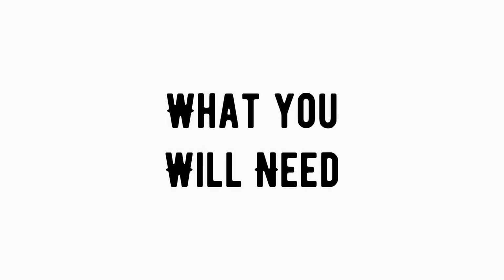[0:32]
Jason here from Instinct Ready, and today I'm going to show you how to make a very simple, very effective face mask using some everyday household items.
Now, many of you are out there buying up all the surgical masks, buying up all the N95 masks. Are you working in the medical field? What? No? Quit buying them, save it for the ones who need it. Now, this is the mask that we're going to make today. Very simple and effective. Let's get started.
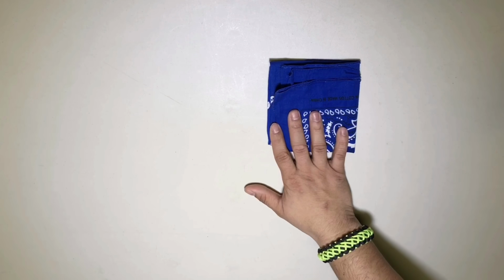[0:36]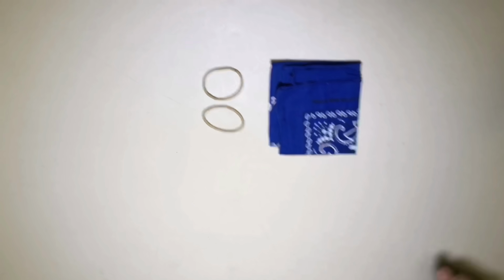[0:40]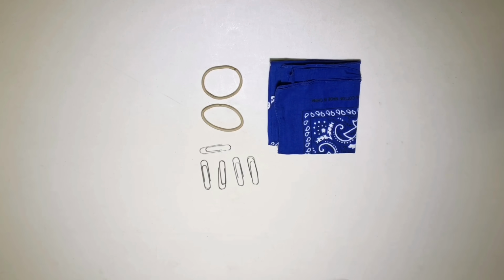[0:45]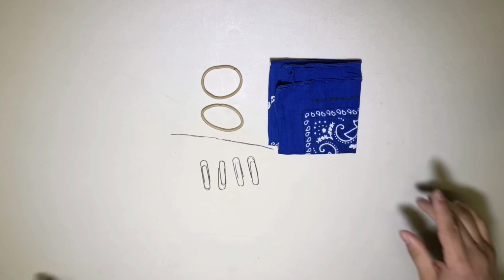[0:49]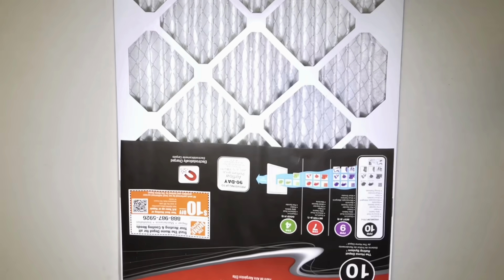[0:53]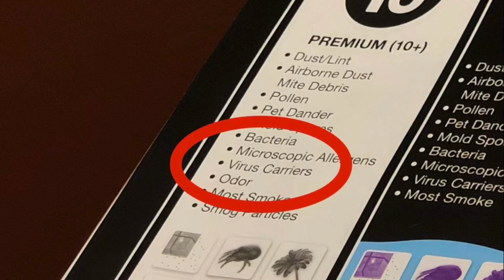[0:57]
So this is what we're going to need to make our mask. You will need a bandana or a similar fabric. We'll need 2 hair elastics or rubber bands, 5 paper clips, one which we have straightened out and turned into a piece of wire, some tape, specifically tape that will stick to the fabric, and finally we have a Honeywell FPR10 air filter, which can filter out particles as small as 0.3 microns, which includes viruses.
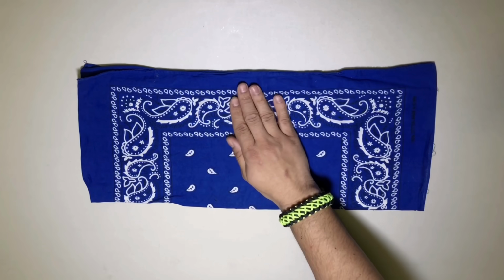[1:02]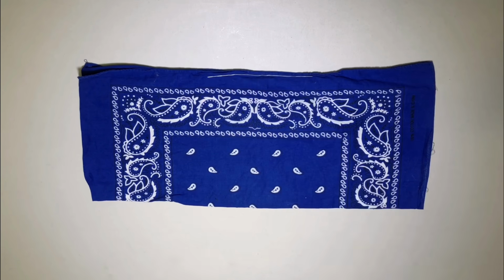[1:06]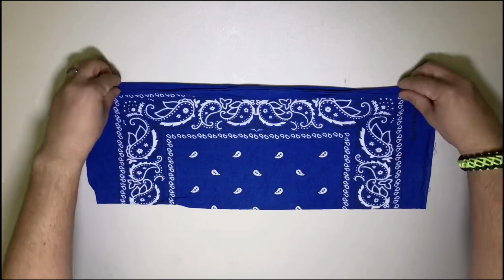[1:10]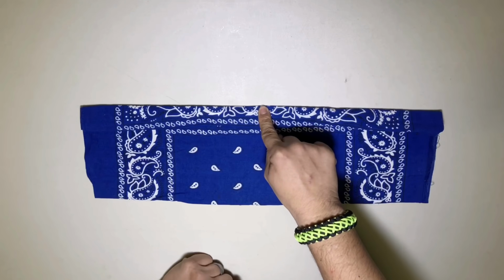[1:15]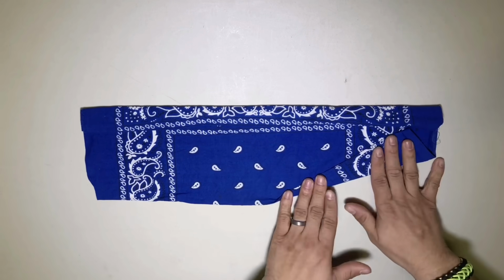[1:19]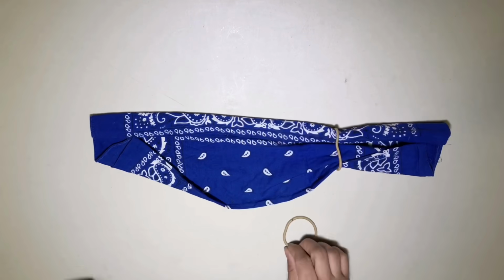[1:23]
To begin, take your bandana and fold it in half. Place the paper clip, which we have straightened out, at the top of the bandana centerfold and secure with tape. Fold the bandana down 2 or 3 times. Make sure to keep the paper clip towards the top of the bandana as you fold it down. Then we are going to fold up the bottom corners into a long triangle. Loop in the hair elastics onto the bandana.
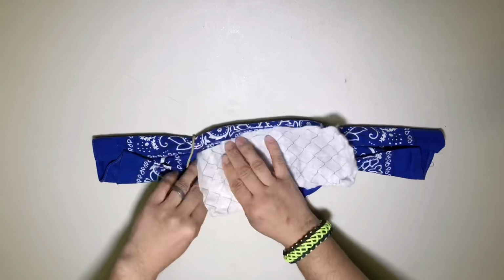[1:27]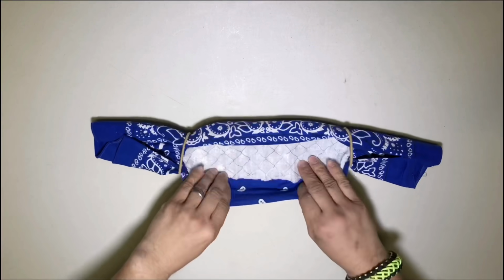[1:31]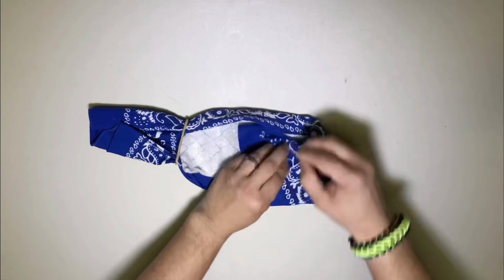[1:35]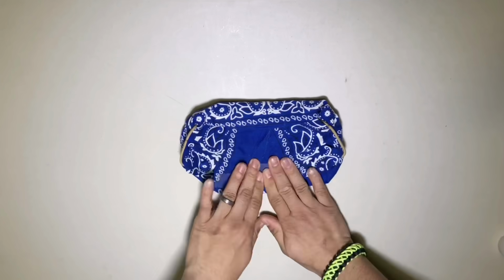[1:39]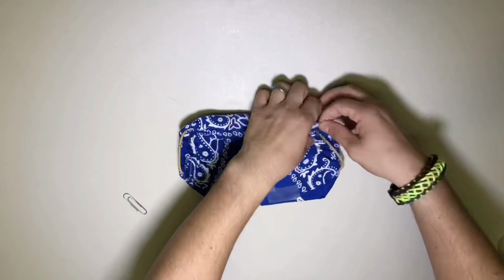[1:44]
Next, tuck the air filter inside the mask, making sure the airflow direction is pointing towards your face. Usually the side with the wires. Fold the ends of the bandana over the filter. Tape down the loose ends of the bandana, and using the remaining 4 paper clips, secure the bandana at the ear loops.
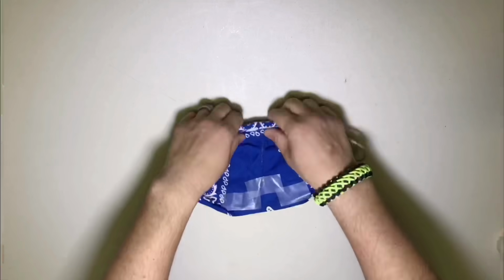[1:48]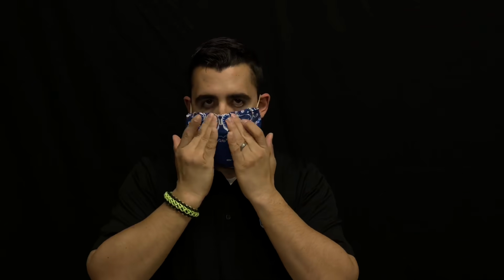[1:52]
Grip the bandana by the ear loops and pull it onto your face, looping it over your ears. Press down on the nose bridge wire, molding the mask to your face and creating a seal.
So there you have it, everyone. Super simple, super easy, and it takes just 5 minutes. And we hope that this design will help you and your family. But remember, by making your own mask, you're going to help our medical responders that are out there on the front lines as well.
And that's why we're starting our very own campaign to make it, don't take it. Make a mask, don't take a mask. Spread the love, don't spread the virus.